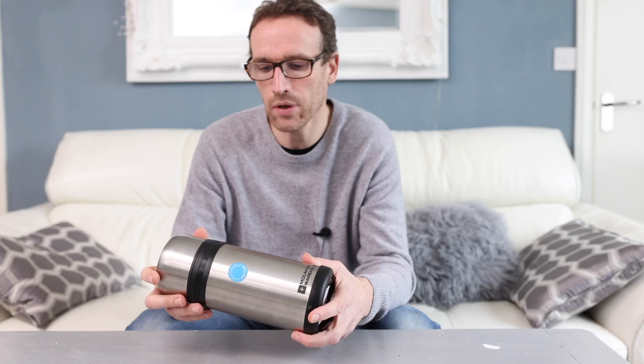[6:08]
I've got a few random videos on this channel, but this one I wanted to do because I thought it would be helpful to people who take medication, so insulin, or maybe they inject themselves for some other reason, some other medical need that they may have. Now, the topic I wanted to talk about is when you want to go on holiday for an extended period of time. So if you're going on a particularly long haul flight, so rather than just a
few hours, maybe 3 or 4 hours, maybe if you're going to the other side of the world, you might be traveling on the plane for up to or even over 24 hours if you've got changes and things like that. So when you're taking medication overseas on a long haul flight, then you may need to keep that medication cool, and that can be a problem.
Now, that will, I'm sure, depend on the sort of medication that you are taking. Some medications would actually be perfectly okay in room temperature conditions for up to about a month. But if you are going on holiday for longer than that and you have limited access to cooling your medication, then you might find that you're in a bit of a sticky situation and you need to find a way around it. So what you're going to be needing to do is keep that medication cool, as if it was in a fridge the whole time, until you do get to somewhere where you can put the medication in a fridge safely and you've got controlled conditions.
So this is a problem that I came across. I was going to go on a long haul flight, and by the time you've left the house, you've got a taxi or a bus, whatever, to the airport, and then you've got to wait around, check in and get on the plane, and then you've got changes on the way, and then at the other end you've got to get your bags and you've got to get to your hotel or get to your family's house or whatever. Add on all of that time and you can probably go for up to like 36 hours if you're going to the other side of the world.
And if you're trying to keep medication between, say, 2 and 8 degrees, or at least like 5 degrees, like you would have in the fridge, then you're going to have some difficulty with that. Now, you've probably already done some research yourself and you've seen online you can actually buy these travel packs, travel cool bags, for medication for such a problem. So I had a look myself, and yes, there are some available out there, but I found a few problems actually. One of them is the cost. They can be a little bit pricey.
The other thing is they tend to use gel packs, and that means that you can put them in the freezer at home and get them nice and cool and put them in the special travel pack. But when you're on your journey, that's going to warm up, obviously, and you'll need to cool it down again. And you may not have access to somewhere where you can put that in a freezer. Very unlikely, actually. And especially on the plane, they're probably not really going to want to take a gel pack in their freezer with all of their passenger food. So it was things like that that made me think, well, there must be another way.
And I also haven't mentioned that if you want the special travel packs that go for a longer period, because some do actually go for up to 36 hours, those ones, apart from the fact that they're very expensive, they're also quite bulky, and I didn't want any of those issues myself. I just wanted a simple solution that was affordable and gave me flexibility on my journey. So I thought, well, what is it I could do?
And in these sorts of situations, I think, try and think outside the box and try and think, well, can I use something else that isn't designed for this and adapt it to work for what I wanted to do? So then when I was looking online for some sort of container, some sort of travel pack that I could put my medication in, I came across a flask, and inside the flask it had this bottle that you'd fill with water, and it was curved as well, so it fit in the flask, and then next to this bottle that you'd cooled, then you could put the medication.
But you've probably already worked out the problem I already had with it, was that yes, you can put the water in it and freeze it, but then you need to put it back in the freezer when it warms up again. So it's the same problem really as the gel pack. But it did give me the idea of, hang on a minute, this is just basically a thermos flask, isn't it? Or an insulated flask. So I thought, well, surely I should just get an insulated flask.
But then the problem is that when you've got one of those flasks, the opening is quite small and I want to put in my medication in there, and I might want to put in some ice in there as well. So when I started to look around online, I found that you can actually buy a soup insulated flask. So I had a look around the town and I found this one. Now this one is by Mountain Warehouse. So this was really cheap. It was actually reduced. I think it was originally 30 or 35 and it's just £20.
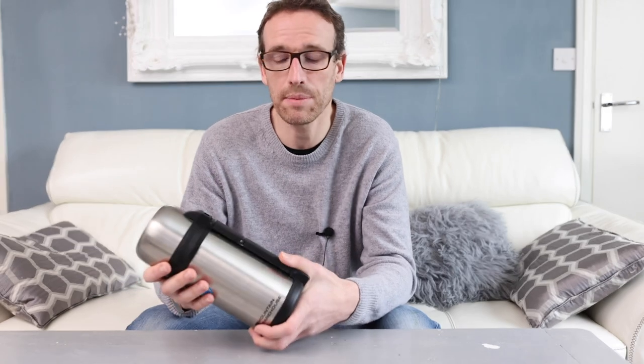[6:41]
Now I'm sure you could find plenty of other ones that do the same job, maybe cheaper or maybe more expensive, I don't know. But this is what suited me. So, the other thing with this, of course, is that once I've used this for transporting the medication, I can use it as a normal flask. Whereas with one of those special medical travel packs, it's only good for that. So if I'm only making this trip once every 5 years, because we don't often go on these really long haul trips where we need to do this sort of thing, then it's just going to sit around and do nothing and be wasted. So at least this way, I've got something I can actually use again for a practical purpose.
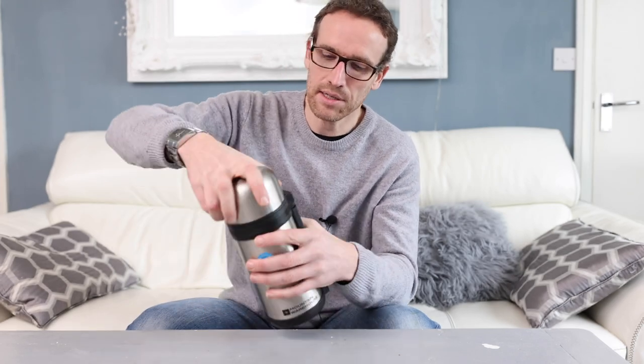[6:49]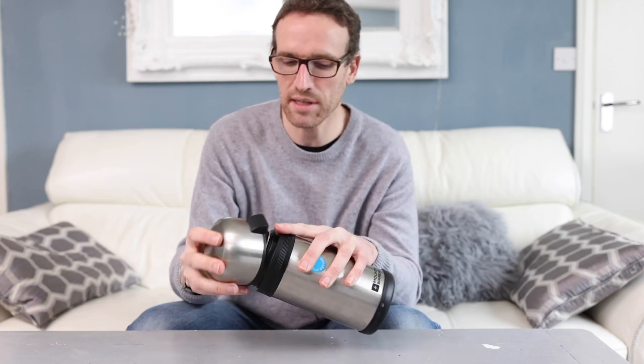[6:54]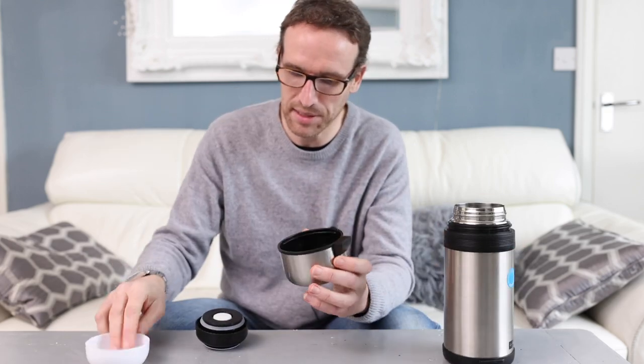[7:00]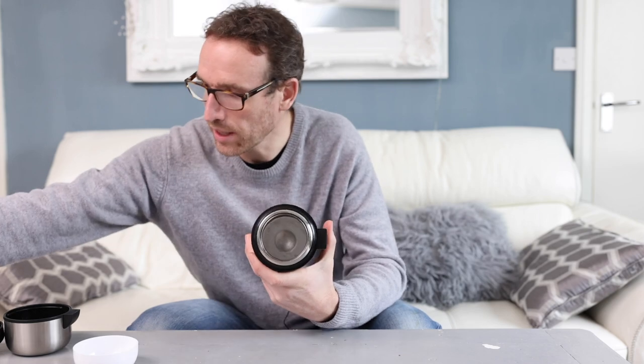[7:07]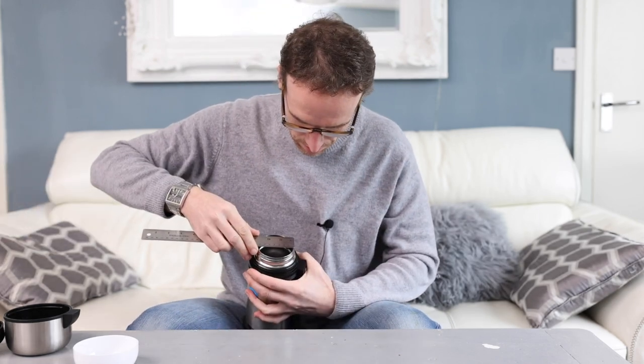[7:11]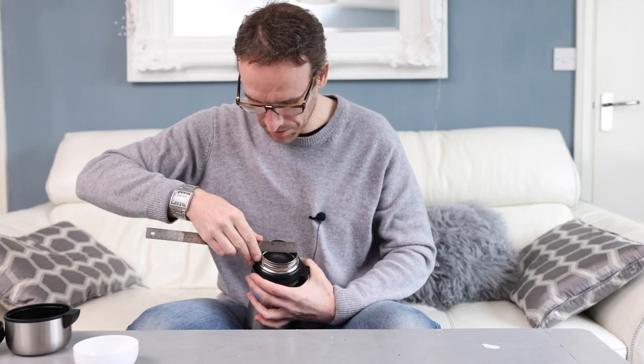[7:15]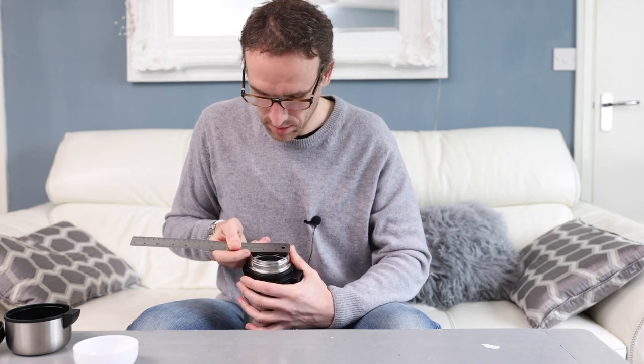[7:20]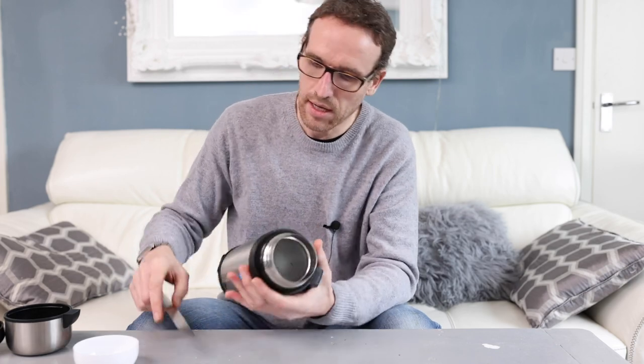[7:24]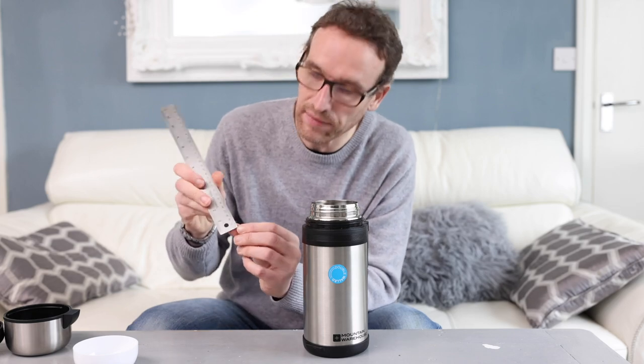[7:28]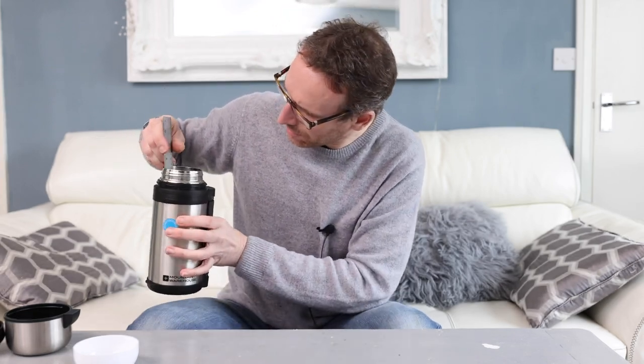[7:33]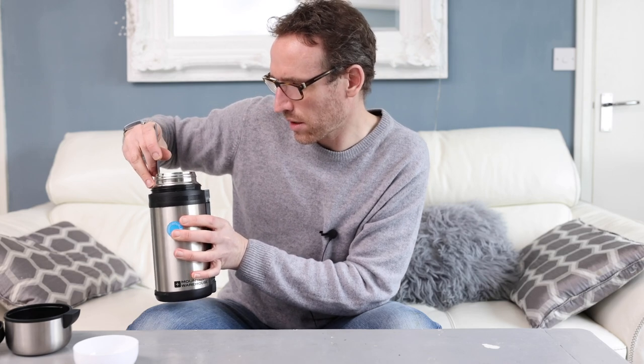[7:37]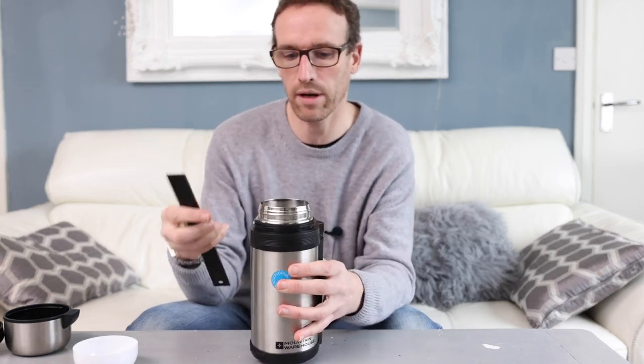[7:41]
So when I was in the shop, I was looking at this and wondering, is it long enough to put my medication in? Is it big enough inside? So let's open it up. Okay. So you've got all the normal stuff you get with an insulated flask. You've got your little cup and all that stuff. But the important thing is how big this is. So I've got a ruler here. So this one is, let's see, about 74 millimetres, or in old money, just under 3 inches, okay? And depth-wise, it's a bit difficult to measure because there's a little bit of extra space on this ruler, but it is about 11.5 centimeters of depth where I can put my medication in there. Okay, so it's pretty decent.
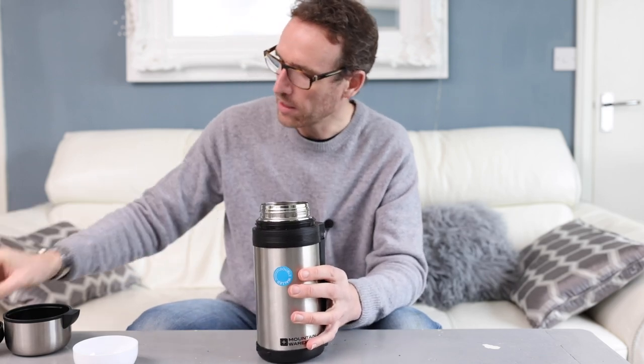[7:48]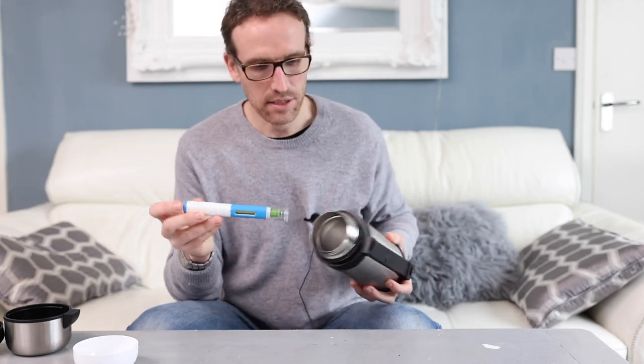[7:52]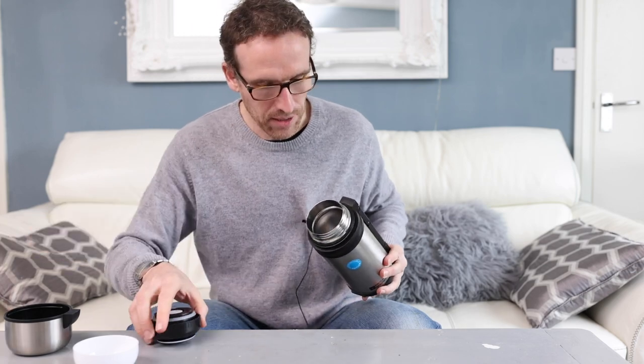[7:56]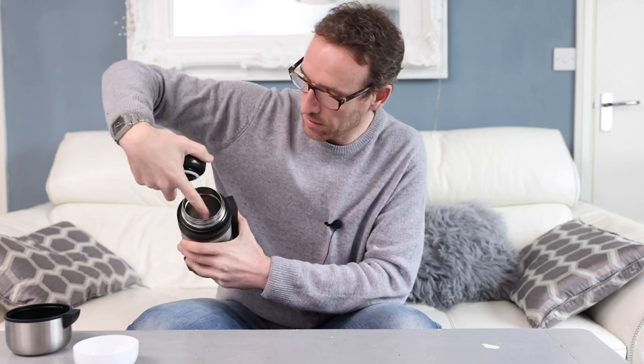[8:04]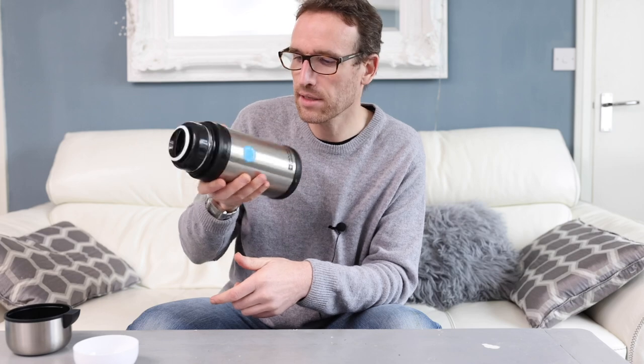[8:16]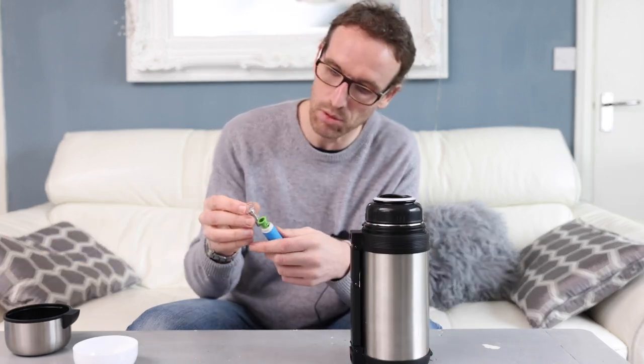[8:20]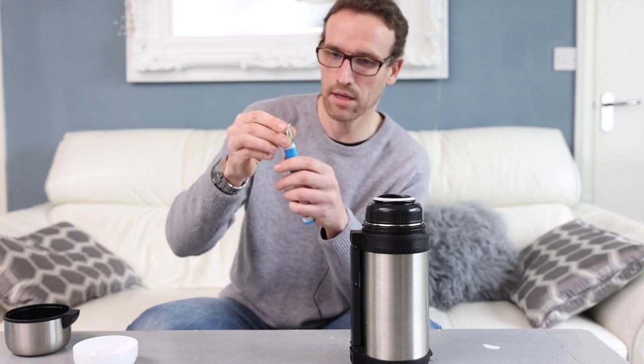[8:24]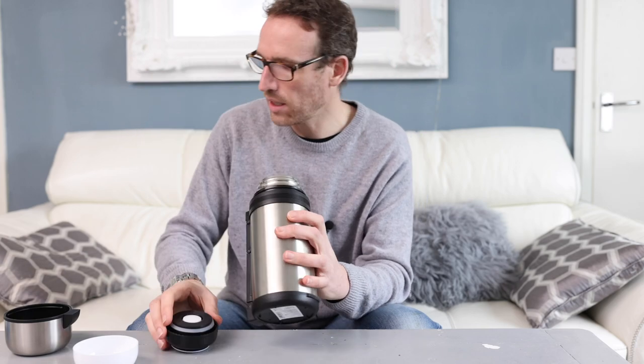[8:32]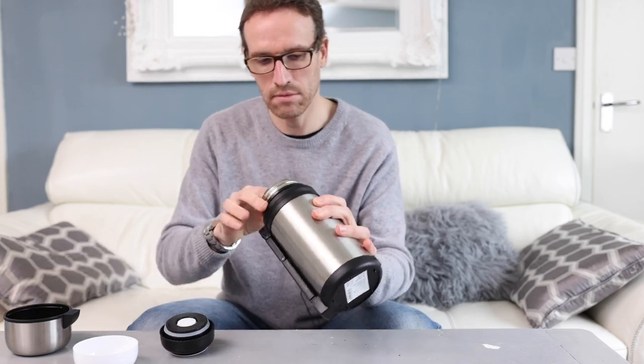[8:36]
Now, if I get one of my injection pens here, I can put that in there, and you see I've got to have a bit of space at the top, because this is going to go actually in there and fill this gap here. So I need to make sure that it is going to go on and fully screw on, which it does. It just about fits. I mean, actually these are used EpiPens, so they're slightly taller than they would be. They'd actually probably be more like that rather than up here. But anyway, you get the idea. So yeah, that goes in just fine. And I can put 3 in here, okay, like that.
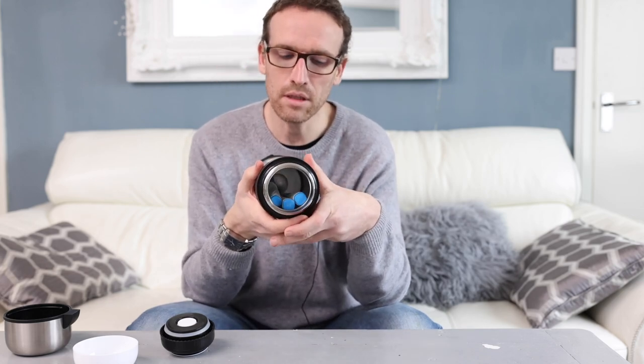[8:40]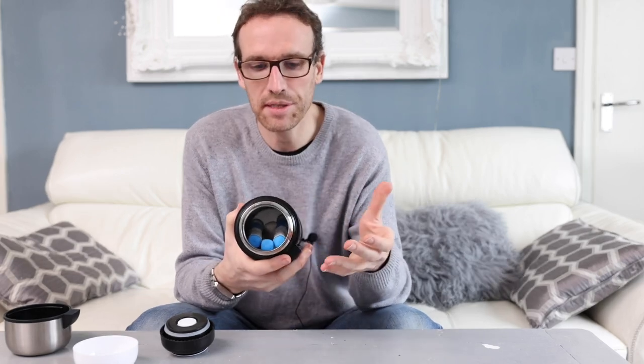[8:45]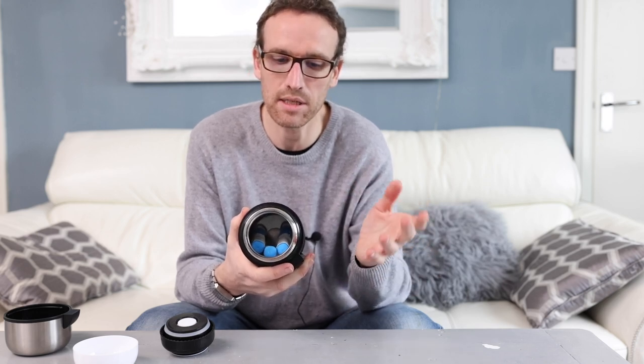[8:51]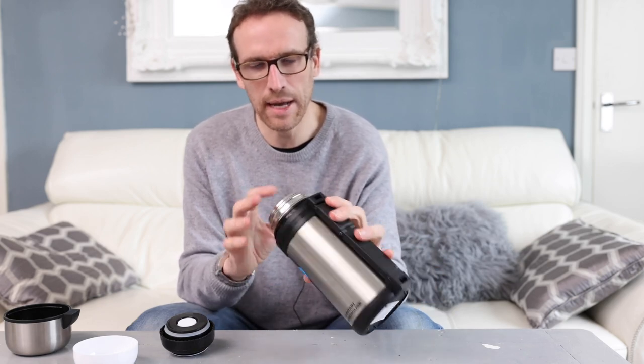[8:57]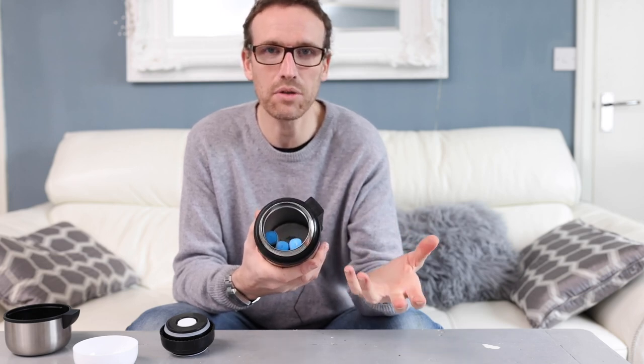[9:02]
And then of course, what I need to do is put something cold in there with it, so ice or an ice pack. But as I said, an ice pack wouldn't be any good because I've got to freeze it again during the trip. So I thought, right, well, somehow I've got to get ice in there, but in a container. You know, it's no good me just chucking ice in next to it, it's going to freeze the medication. So you need to have some way of separating it.
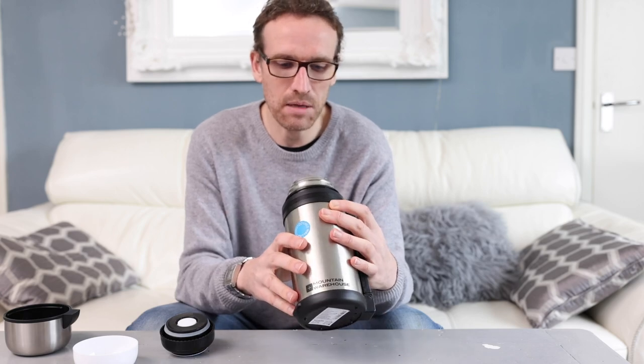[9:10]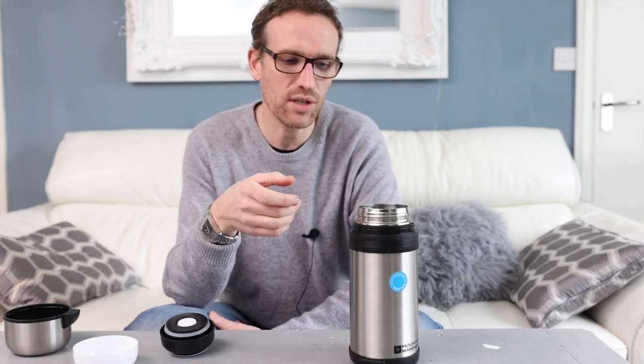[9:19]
So I thought, well, maybe I could just get like a shampoo bottle or something like that, you know, some sort of container that you'd get for something you'd buy in the supermarket, and just shove some ice in it. But of course, the trouble with that is that all of those have these small caps on, and the opening is really small, so you can't get an ice cube in there.
And yes, okay, maybe when I'm on the plane or I'm at the airport lounge or something, I could get some ice and ask them to crush it up or something, but that's just gonna be a big faff. The last thing I wanna be doing is stressing about that. You just wanna get some ice, chuck it in, and be done with it. So I was like, right, well, somehow I've gotta get some sort of container in there which is sealed, but also I can open it easily.
Because, you know, I could put some sort of container in there and seal it all shut. But then when it all starts to melt and I need to replace it, I've got to open it all again. So I was like, well, how can I do this? I haven't got any sort of bottle container where I can screw on a cap and seal it that way, because all of the caps are too small, so I can't get ice in there. So I had to think of some other way of getting ice in a container that I could seal. So there's probably a much better solution that I haven't thought of yet, but for the time being,
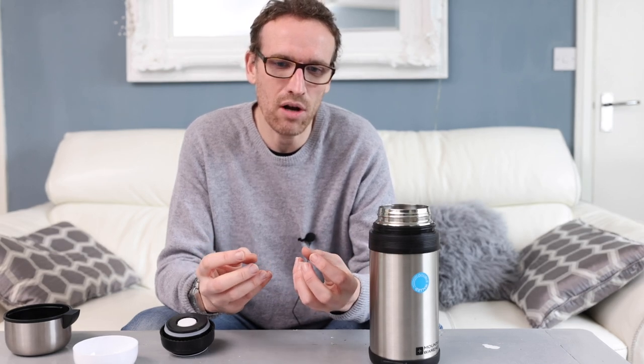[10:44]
what I came up with was just buying some plumbing pipe. Now I couldn't seem to find any sort of plumbing plug or cap that I could just stick on the end of the pipe. Everything that I looked at in the hardware store seemed to have to be glued on or have a thread on it or something like that. So I knew at the very least that the plumbing pipe would be big enough. I could put some ice cubes in there, but then it's like, well, how can I seal it?
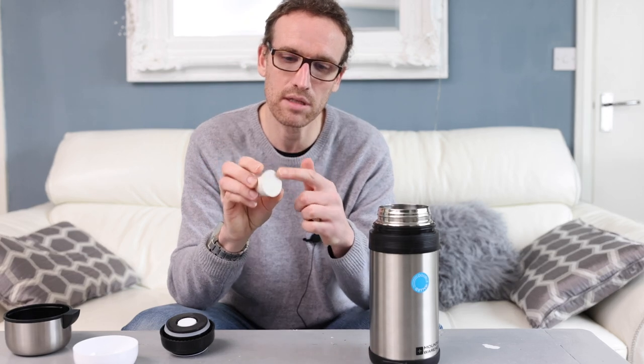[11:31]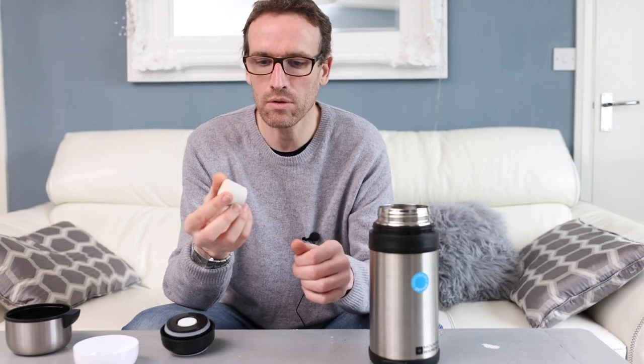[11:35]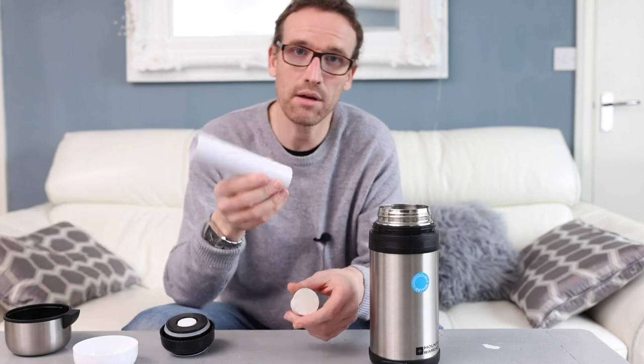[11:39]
So then I was looking online, going on eBay and Amazon and typing in caps and plugs and bungs and stuff. And then what I found is these science lab bungs. And the great thing about these is that they come in different sizes. They tell you the millimeters, the diameter at the top and the diameter at the bottom and how tall they are. So I could get the perfect size for the tube that I was going to use.
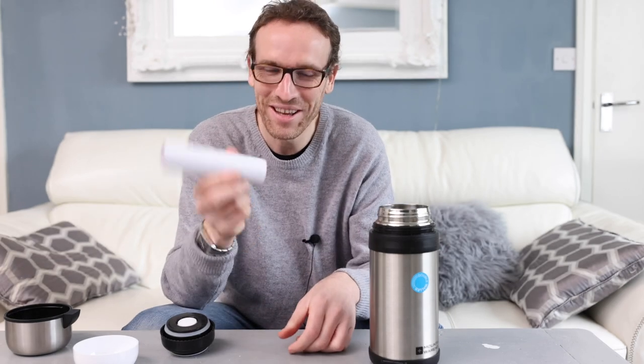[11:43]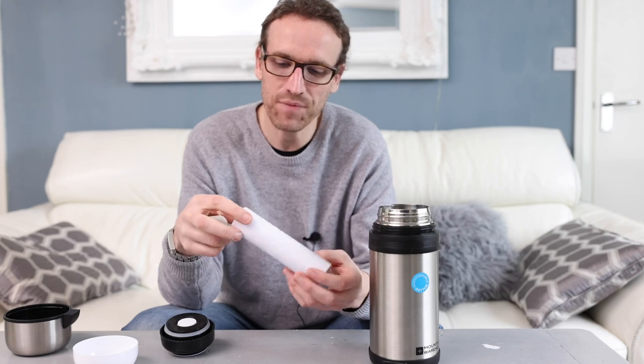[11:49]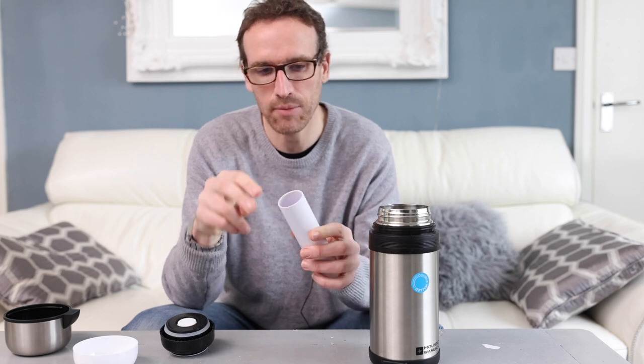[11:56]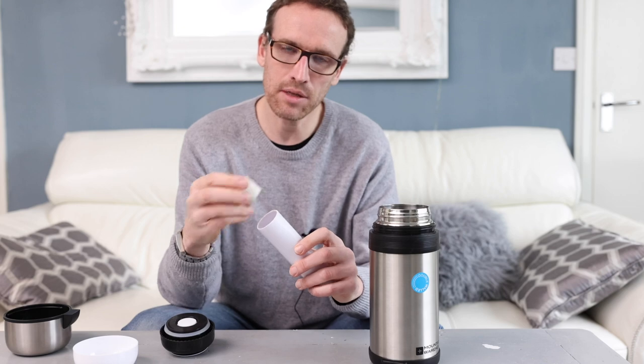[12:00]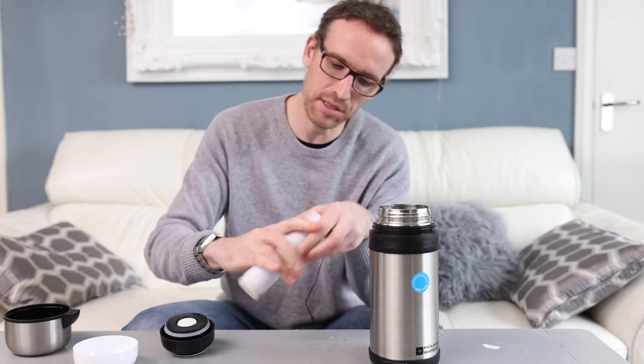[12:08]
Okay, so this is just some plumbing pipe. I had to buy 3 meters of this just to get about 11 centimeters of it. So it's a bit daft. And also, what I did when I got this tubing, I sanded off the edges, because when I cut it, I had a really sharp edge and that was digging into the rubber. I didn't want that, so I just wanted it to ease in when I put the rubber in and create a nice seal. So I've sanded all that off, and then I can just press that in quite nicely like that.
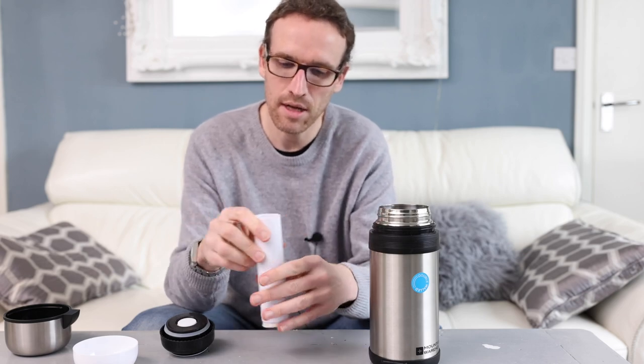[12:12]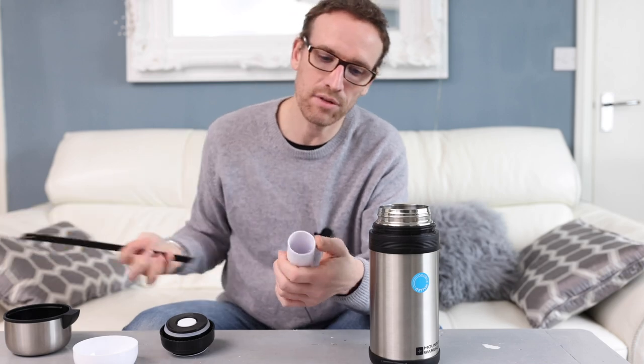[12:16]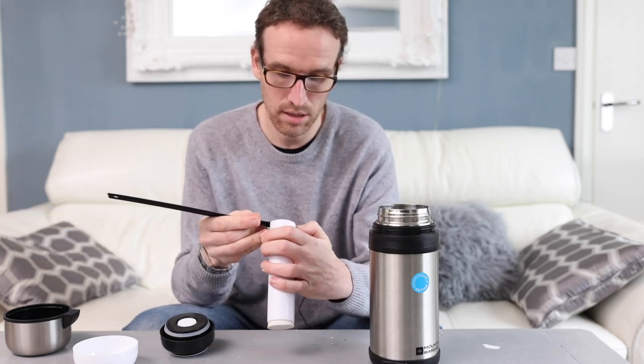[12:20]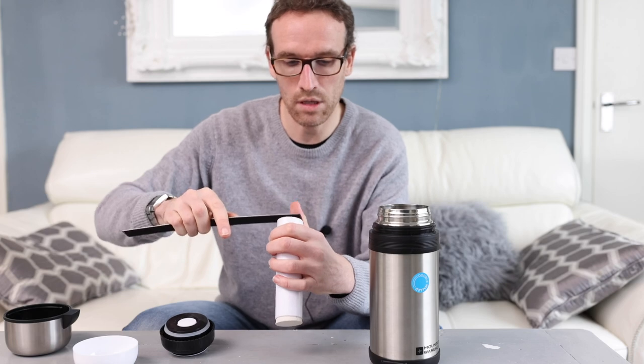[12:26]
It's a good seal. And then the internal diameter of this is about 38, 39 millimeters, or an inch and a half.
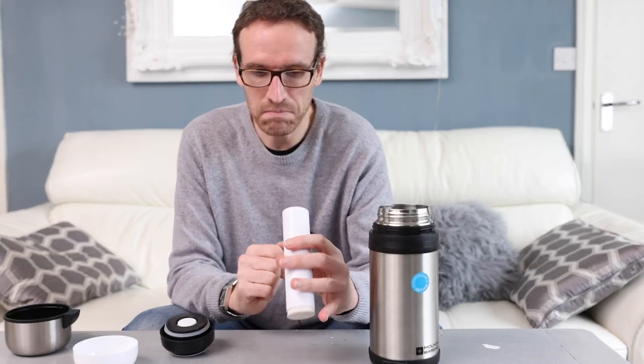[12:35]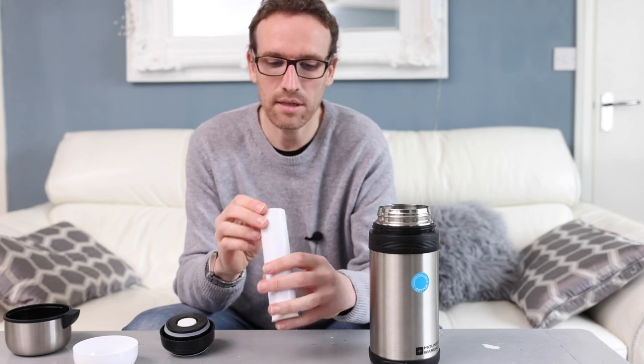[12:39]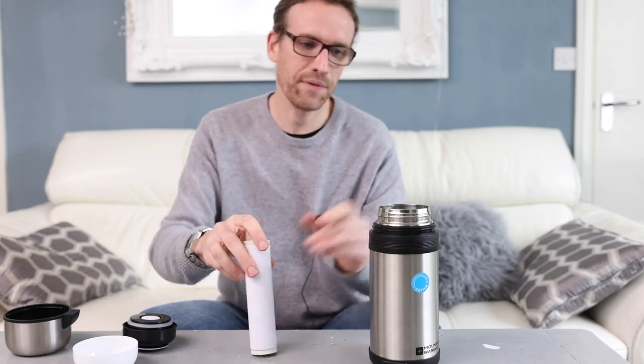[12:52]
Okay, I think actually it was Imperial when I bought this, but anyway, so I can get a whole standard ice cube in there, and I think about five or six tall in that for this particular configuration. I won't get some ice now and put it in, I'll probably make a big mess, but anyway, I can put all that in there and just cap that off.
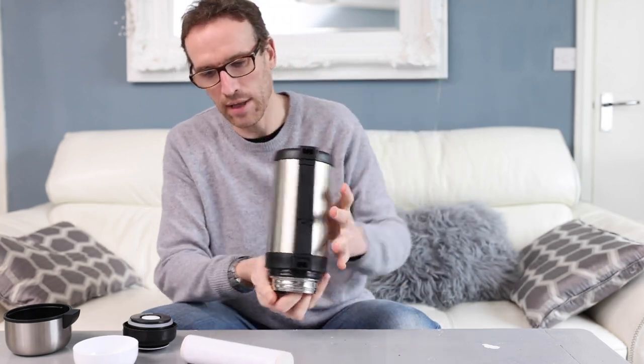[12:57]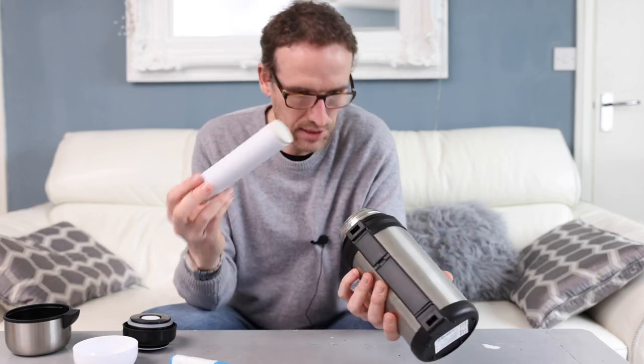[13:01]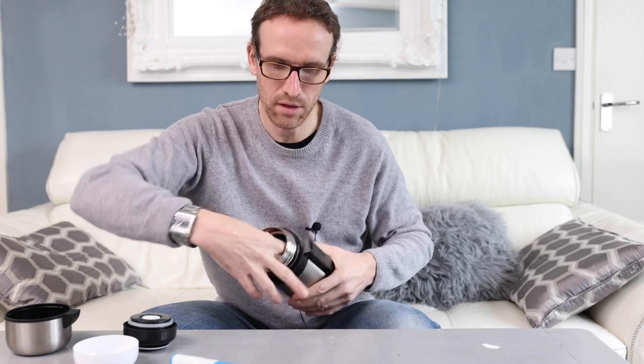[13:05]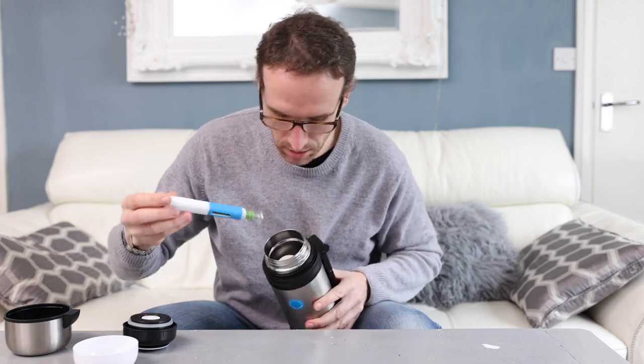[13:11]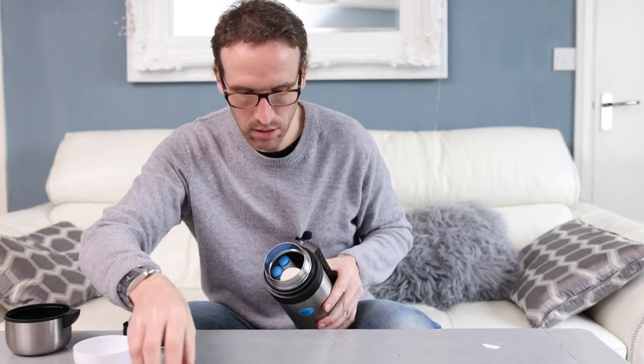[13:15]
And actually, I think what I had to do, I had to put that in first, otherwise it's a bit tricky to get the medication in. So if I put that in there, it sort of falls into the recess a bit. And then I can put these in around it. Okay. Like that.
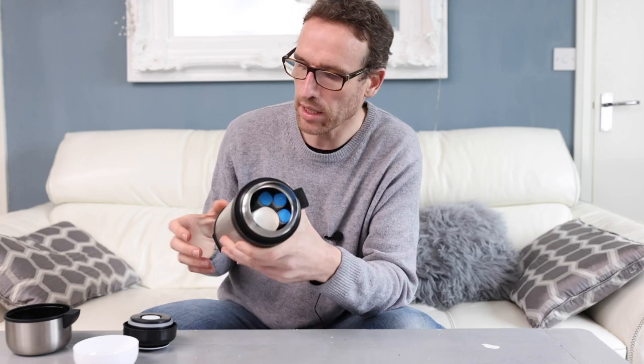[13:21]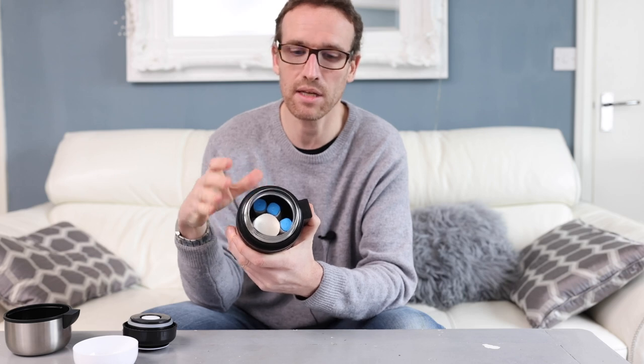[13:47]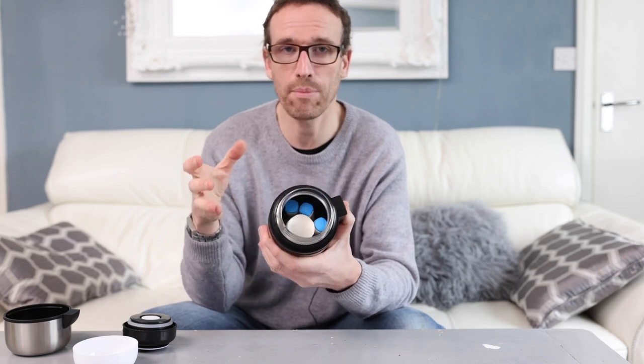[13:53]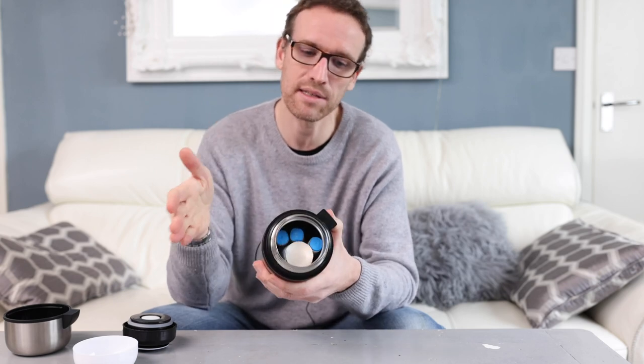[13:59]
See? Now what I'm going to do, I'm going to get some corrugated plastic, just some sort of packing material. If you were ordering some large photos, you often get this corrugated plastic sheeting. So I'll put that between the tubing with the ice in it and the medication, and that'll just create a little bit of insulation and a buffer to stop any risk of the medication freezing. Now I got that idea because when I looked at the proper medical travel packs, they had basically the same stuff in a little pocket just to separate the gel packs from medication.
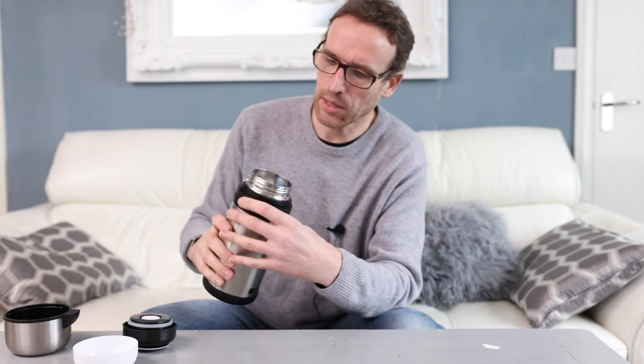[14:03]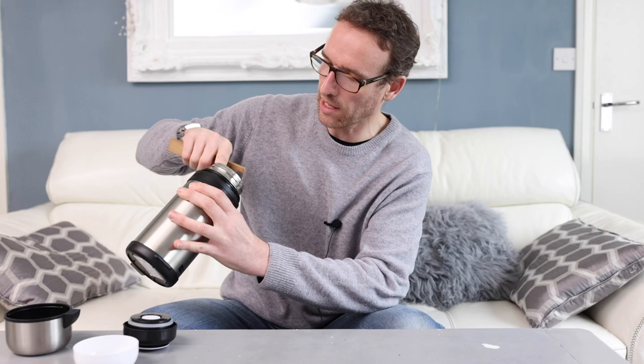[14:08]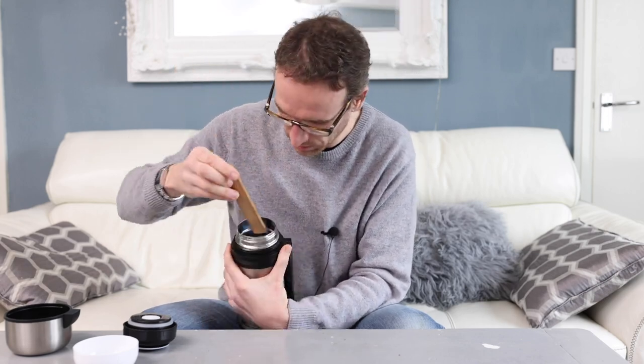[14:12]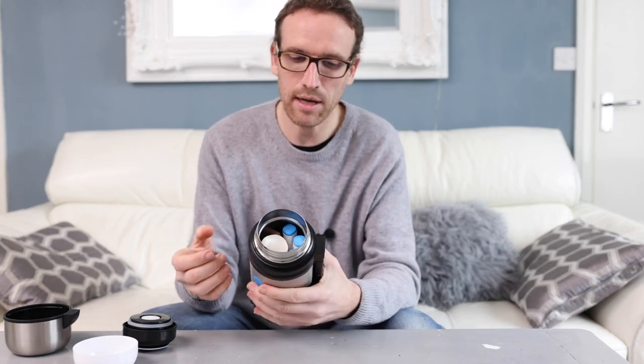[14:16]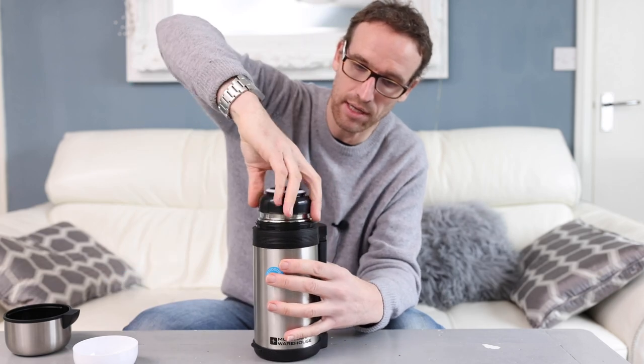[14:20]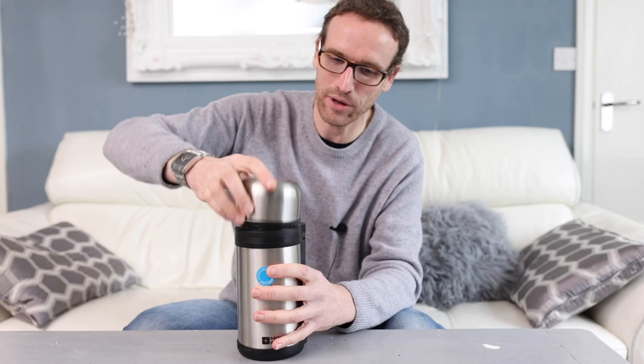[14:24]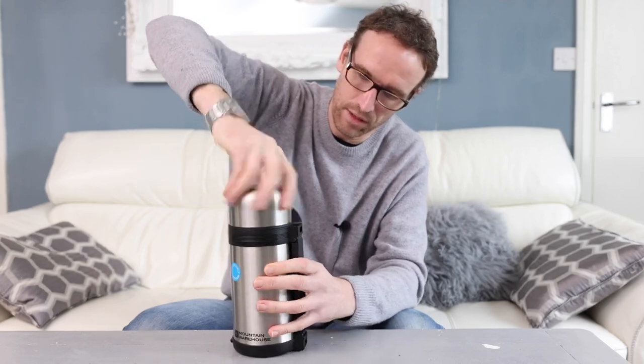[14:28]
So anyway, that fits in there quite nicely, and if I just jiggle it around a bit, I've got a thermometer here, so I can actually shove that in there. So during the trip, I can have this like this, right? So it's all done up. All right, there you go. Even got my cup on it, and let's do this up.
Okay, right. So imagine that I'm on the plane, and I've already been traveling from home for, I don't know, 12, 18 hours, and as long as I haven't opened it, it should be okay. It shouldn't get down or up to a temperature which causes me a problem. This particular medication, they need to keep it between 2 and 8 degrees. And this one also, you can have it at room temperature, so up to about 25 degrees for up to about 28 days. But because my holiday was longer than that time, at least one of those EpiPens would need to be kept cool for a longer period, so I could use all three of them rather than get stuck.
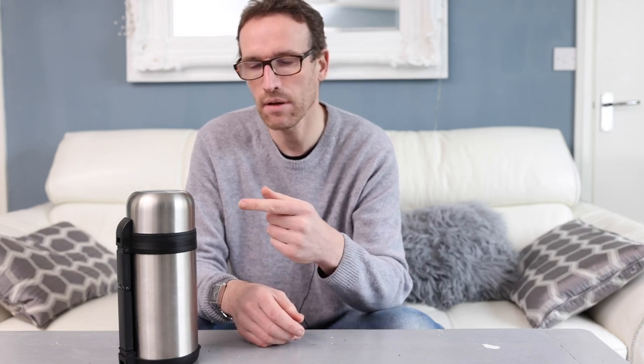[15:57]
So let's say I'm on my trip and it's been 12 or 18 hours and I'm thinking, I want to be on the safe side here. I'm probably not going to make it the whole way at the correct temperature. So what I can do is, I'm on the plane and at an appropriate moment, I can ask the stewardess, can I have some ice, please? And I'll ask for 2 cups. So I'll say, can I have about 5 or 6 ice cubes in a cup and then an extra cup, please? So then when she or he brings it, I can empty out the melted ice into 1 cup and then quickly switch over and put in the new ice and then seal it all up.
So the idea is that I'm not giving this to them to take away and put ice in, and potentially they don't want the responsibility, and also they might be a bit slow doing it. They might get held up by people in the aisle or something. So this way I can get the ice, I can swap it over quickly, and I can get it back to a safe temperature again. And that's just the beauty of it. I don't have to worry about asking anyone to put anything in the freezer or the EpiPens themselves into a fridge, or worry about forgetting them or anything like that. It's just all with me, it's all safe, and it hasn't leaked.
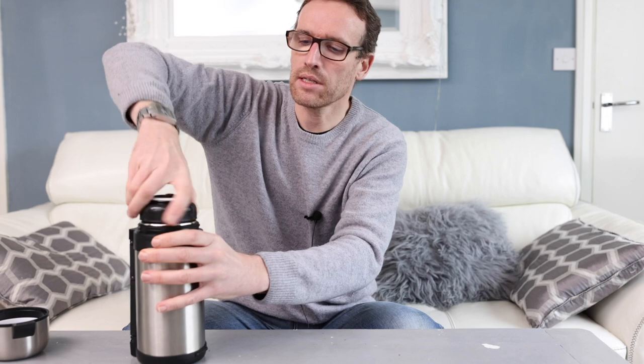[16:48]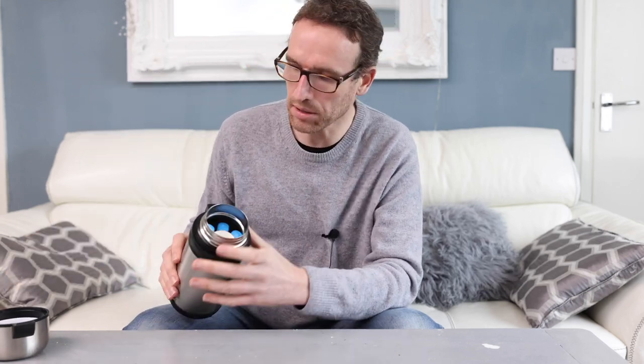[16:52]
And because I cut the tubing here to the correct length and put the bungs on, and actually when I put this on, this presses against the bung here, so it won't allow this to come undone.
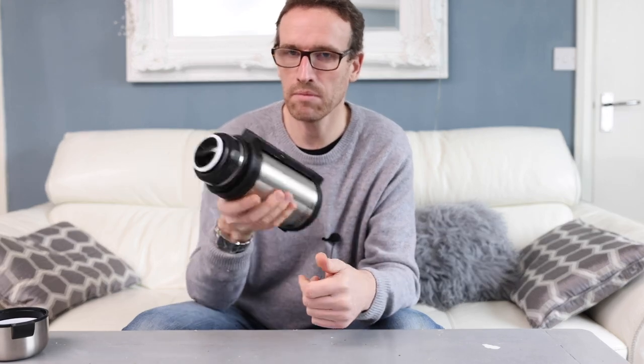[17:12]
So I can do this, and the only thing that's wobbling about is the EpiPens, and I could put a bit of padding in there as well, but that actual tubing isn't moving, that's just gripping by the rubber bungs. So this just works really well.
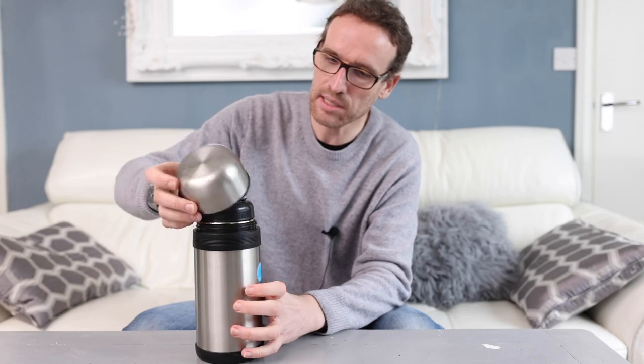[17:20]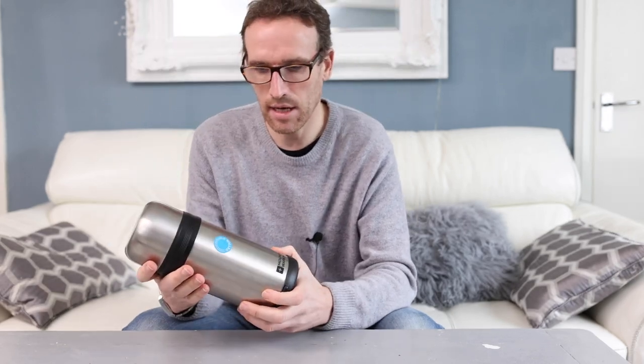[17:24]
So this, as I said, the flask itself cost £20. The tubing was, I think, like £5.50, which is silly, really, because I had to buy 3 meters of it. And then the bungs, I think they were like £10, actually. I had to buy 4 of them. And so it worked out about £35.
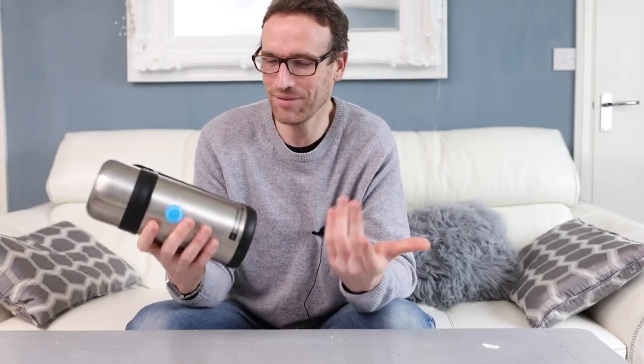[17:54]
So it's still not super cheap, but I have got a flask at least I can use. It's not completely useless. I could give it away, I could sell it. It's much better than just having some travel pack, which is no good after I've used it or don't use it for like years. Just one other thing I should mention, actually, and that's that when you are preparing for
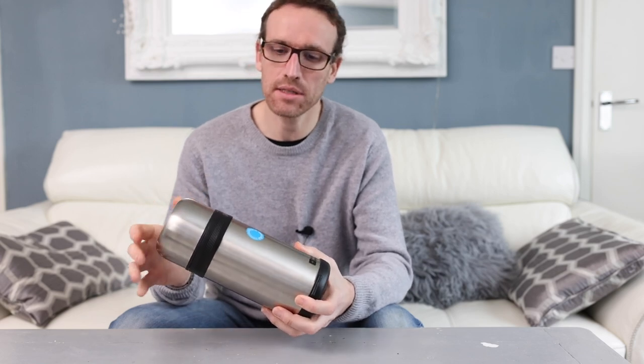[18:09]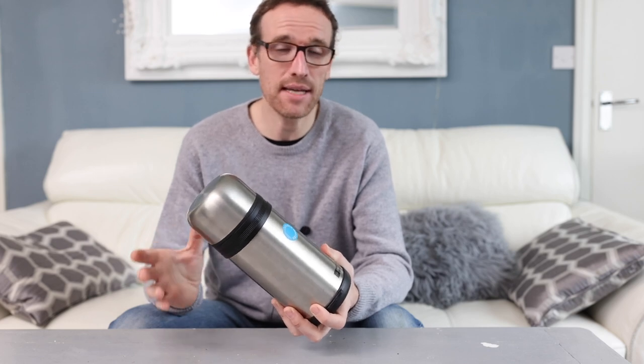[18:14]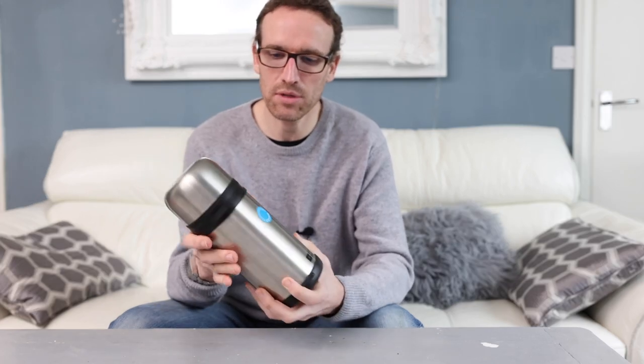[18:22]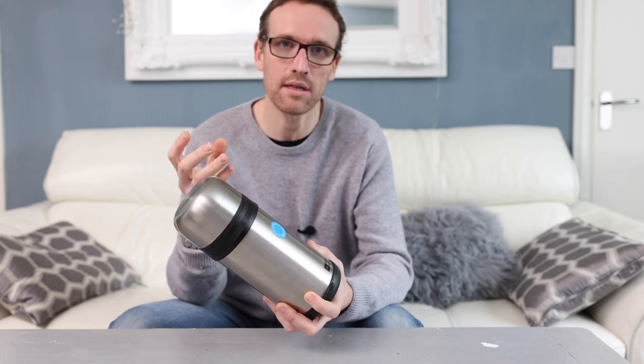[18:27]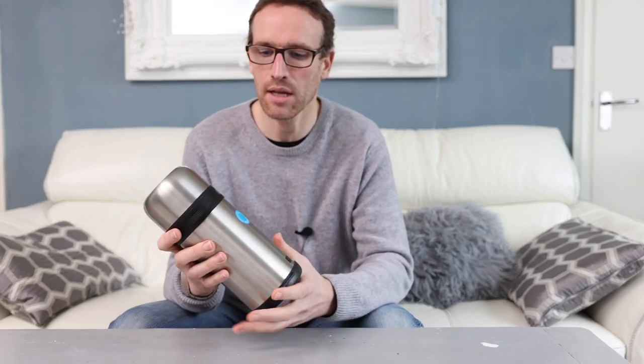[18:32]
your trip, I suggest you take this flask, take it all to pieces, put it in the freezer, and then leave it there for at least an hour, get it fully cooled down, because the last thing you want to do is take it at room temperature, put the ice in, and then the flask itself, because it's been at room temperature, is going to warm up that ice prematurely. So you want to start with this as cold as it possibly can be, and then you haven't got the temperatures fighting each other. So do that, and then you'll find you should get a much longer time that this stays cold.
I tested it a couple of times. The first time I kept on opening it all the time, every number of hours, to check and see what it was doing. So I didn't get quite as long a time. The first time I think I got about 18 hours before it was beyond the temperature range that I wanted. So then the next time I put it in the freezer first, got it all fully cooled down, sealed it all up, and then didn't open it again for I think 23 hours. And by that time it was up to 8 degrees, which is like the limit.
So I would feel very comfortable leaving this for 18 hours and not opening it. And then I could change the ice over at that point. And that is more than enough time. If you're getting a coach to the airport, checking in, getting on the flight, by the time you've done all that, you've probably elapsed about 5 or 6 hours. So you've got plenty of flexibility there, because you're going to be sat on that plane for a long time, so you can get that ice in there. So yeah, that's what to do.
So hopefully that'll be helpful to someone out there, because I certainly had a look around online and I was really struggling to find some good solutions. They weren't expensive, and ones that were flexible did what I needed to do, and are easy to access and change things over.
Now, please do understand that this is just my opinion and this is what I have done myself. It may not work for you. I don't want to be held responsible if you mess it up or something happens to your medication. So this is entirely at your own risk, but this is just an idea that I had,